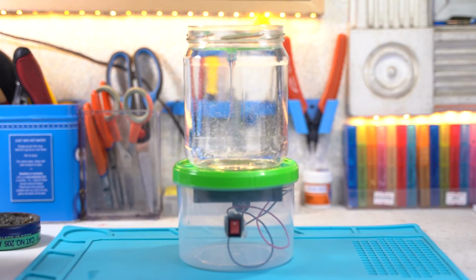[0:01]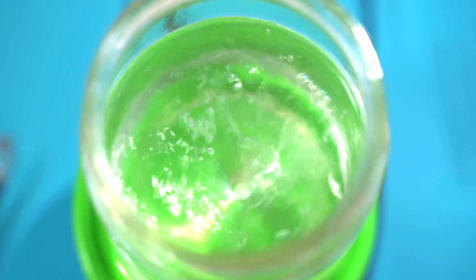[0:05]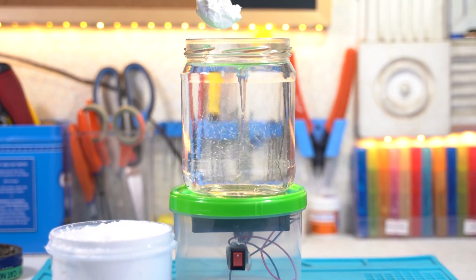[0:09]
In this week's Yuken project, we're going to build a magnetic stirrer. It's a simple and useful device I use for mixing chemicals for my projects, one of which is sodium hydroxide, which I use for PCB fabrication.
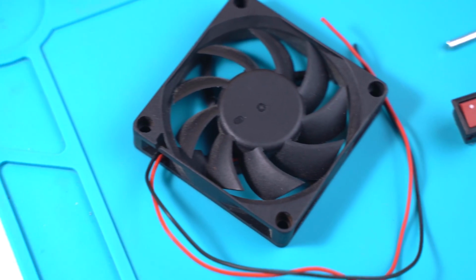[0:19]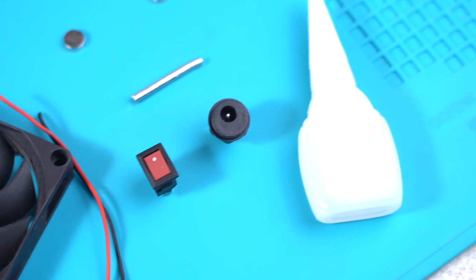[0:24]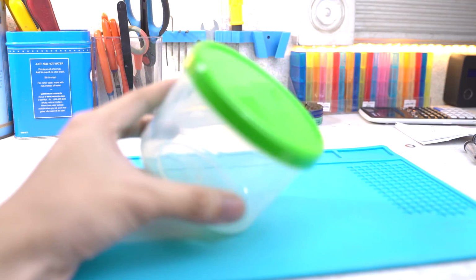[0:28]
Let's first start with the things that you will need. First, you'll need the 12-volt cooling fan, a switch and a DC jack, a super glue, and some neodymium magnets. You'll also need a plastic container in which your cooling fan would fit in.
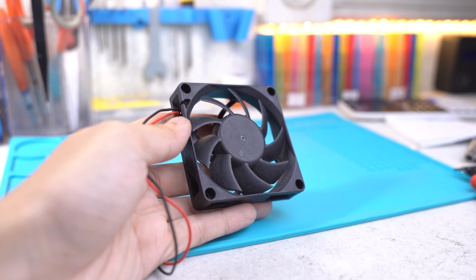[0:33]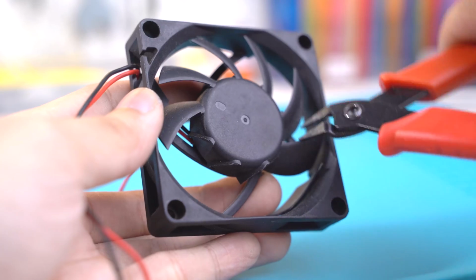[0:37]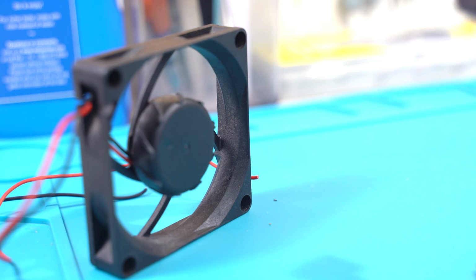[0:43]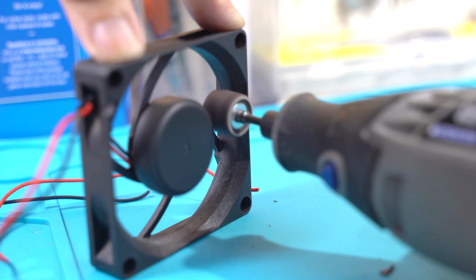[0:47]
The first step in this project is to remove the blades of the fan. In my case, I used a wire cutter to snip off the blades. The goal here is to eliminate wind resistance while keeping the fan's motor perfectly balanced. By using a Dremel tool, you can easily sand off the protruding edges.
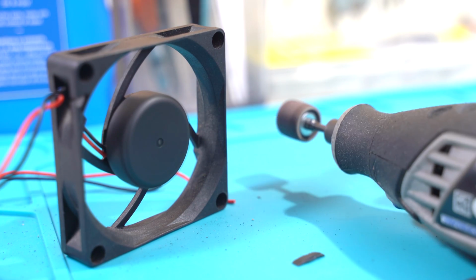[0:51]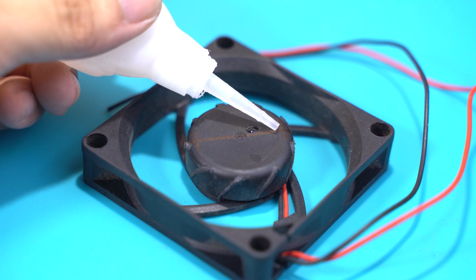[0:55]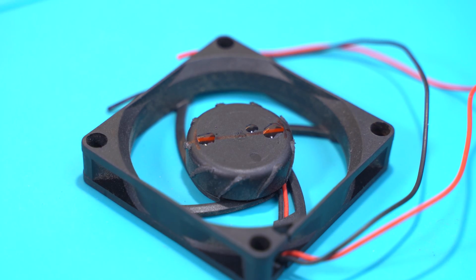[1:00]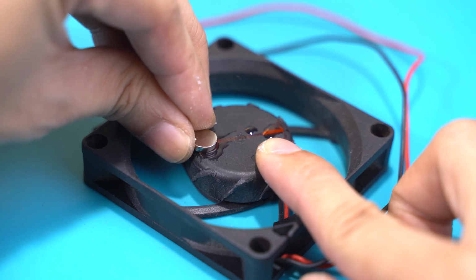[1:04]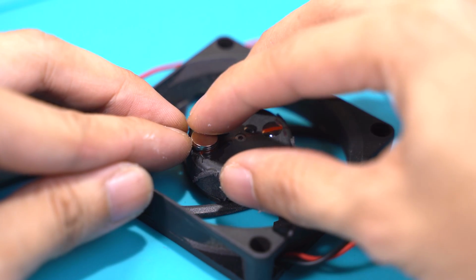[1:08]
In mounting your magnets, you'll need a few drops of super glue to secure it in place. The first magnet should have its north facing upwards. Use a pair of tweezers if you must. Just remember that the motor has magnets in it. Your magnets could repel from it, making the alignment process much more difficult.
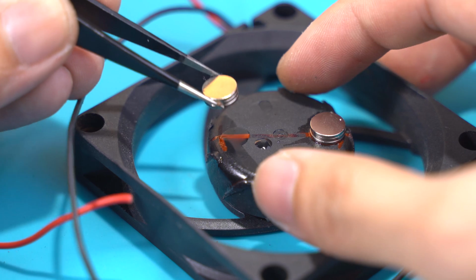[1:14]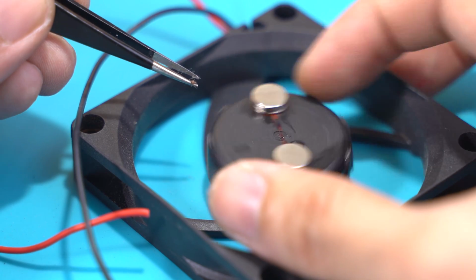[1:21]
In my case, I got a lot of super glue on my hand. As for the other magnet, its south must be facing upwards. Once done, set it aside and leave it to dry for a couple of minutes.
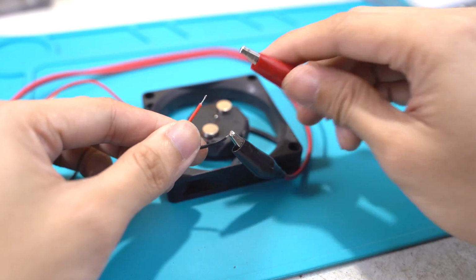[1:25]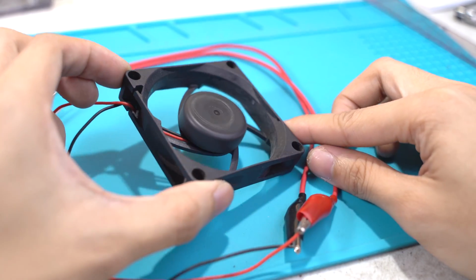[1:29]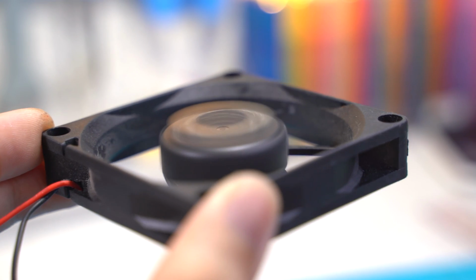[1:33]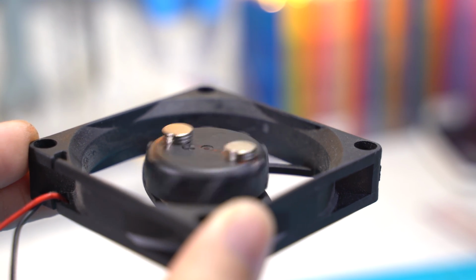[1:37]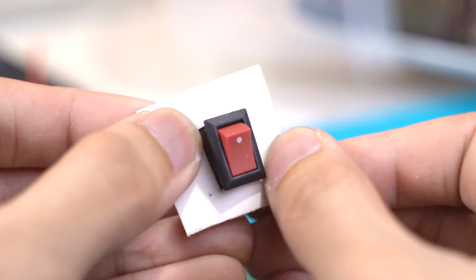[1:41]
I then set my bench power supply to 12 volts and observed whether my setup was well balanced. If vibrations are barely felt, it means you did a very good job in aligning the magnets. If not, you would have to redo it again as your motor would have a hard time spinning due to the added load.
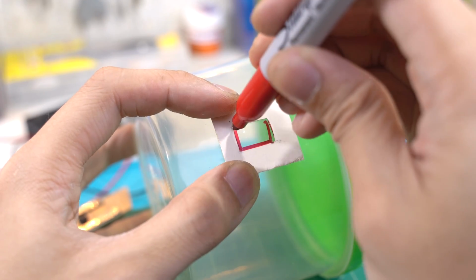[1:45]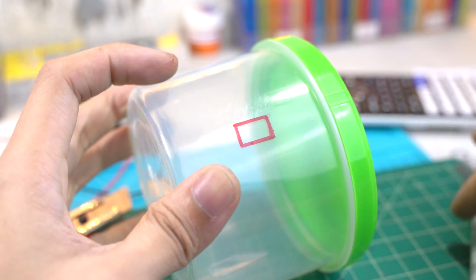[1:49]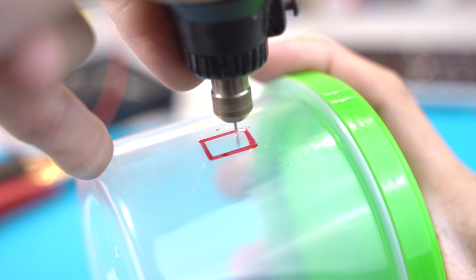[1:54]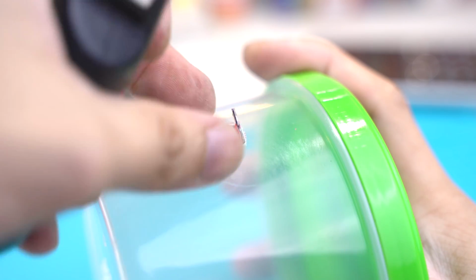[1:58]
I made a cardboard template for my switch and transferred the measurements to my plastic container. You can use a Sharpie or whatever kind of marker you have lying around. In my years of posting projects at Instructables, I'm often asked what I use to cut plastic. Well, I usually use my mini drill and use it as a routing tool. It's kinda like using your hands and your drill as a CNC machine.
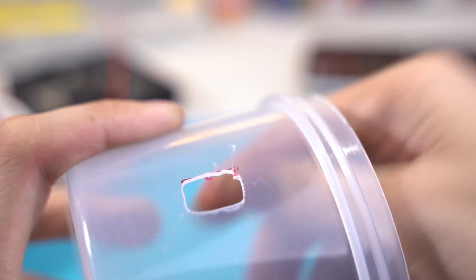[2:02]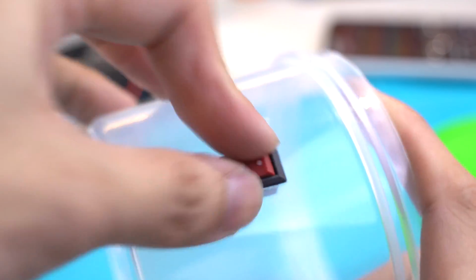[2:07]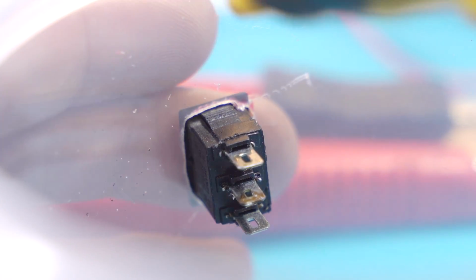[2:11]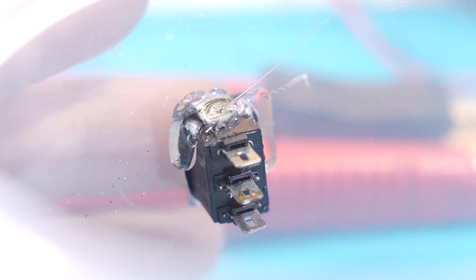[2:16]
Well, I accidentally broke my bit, so I had to pop off the remaining plastic. Anyway, after doing so, you can now mount your switch. To prevent your switch from wobbling around, you can use a few blobs of hot glue to secure it in place. Then you can cut another hole for your DC jack.
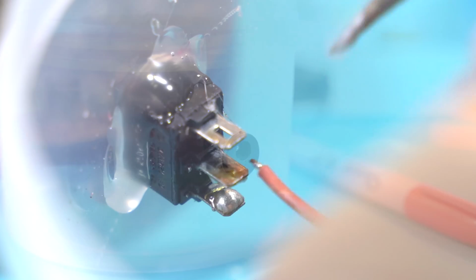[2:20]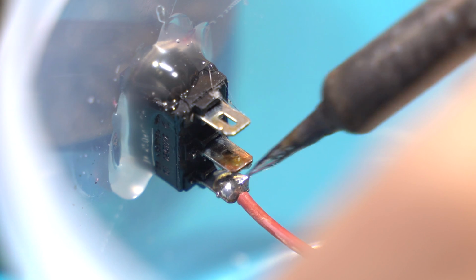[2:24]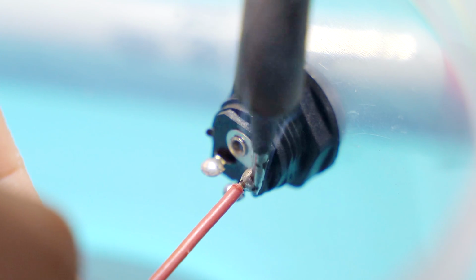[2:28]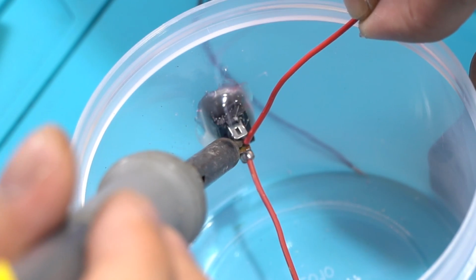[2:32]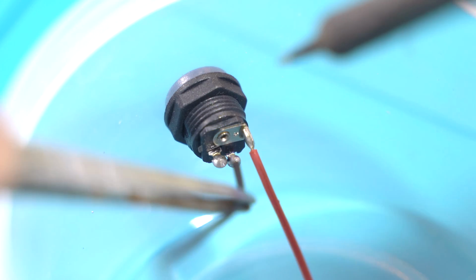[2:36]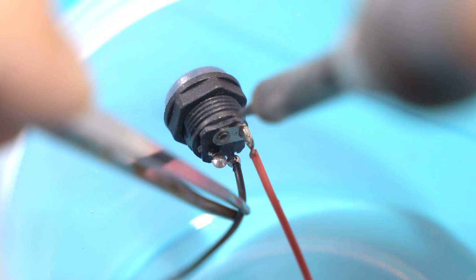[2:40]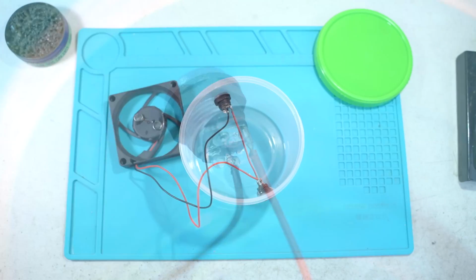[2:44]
As for the wiring, I connected the switch, the DC jack, and the fan in series. I started by soldering the lower pin of my switch to the positive end of my DC jack. Then soldered the positive wire of my cooling fan to the middle pin of my switch. As for the negative wire of my cooling fan, I then soldered it to the negative end of my DC jack. Now that you're done with the wiring, you can now mount your fan in place in your plastic container.
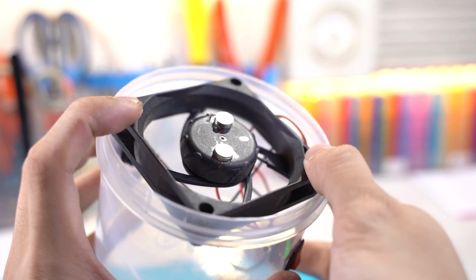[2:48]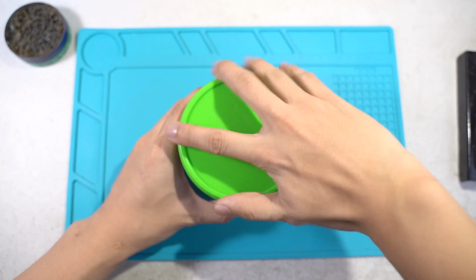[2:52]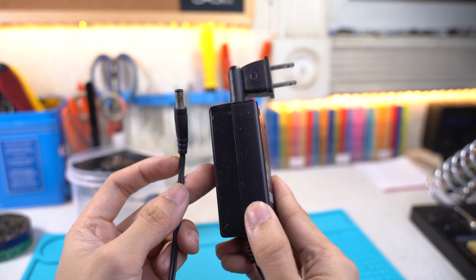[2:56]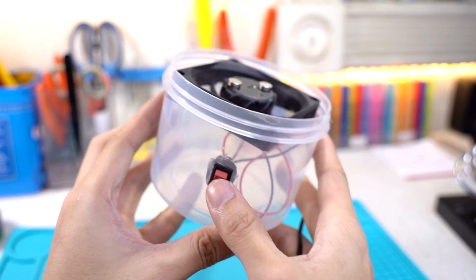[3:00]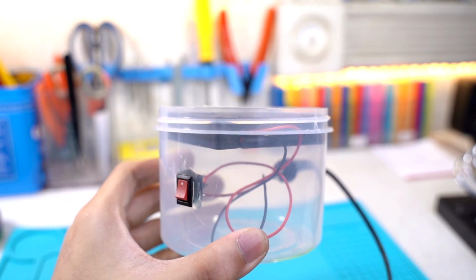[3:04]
Luckily, mine fit perfectly inside my chosen container. Since my cooling fan is rated at 12 volts, I had to find a 12-volt power brick from my stash. I then connected my brick to my project's DC jack and plugged it in on the outlet. After flicking the switch, your fan's motor should swiftly rotate.
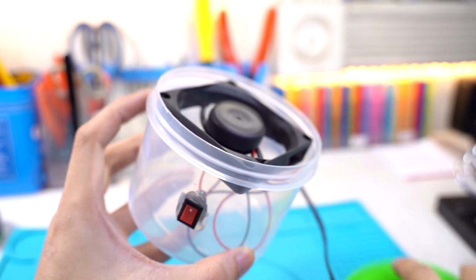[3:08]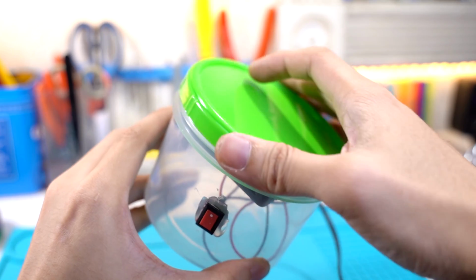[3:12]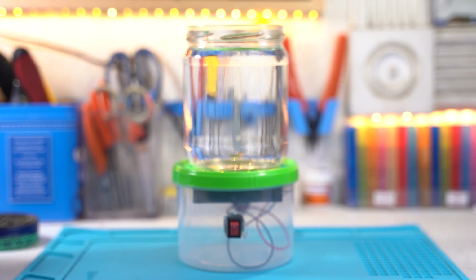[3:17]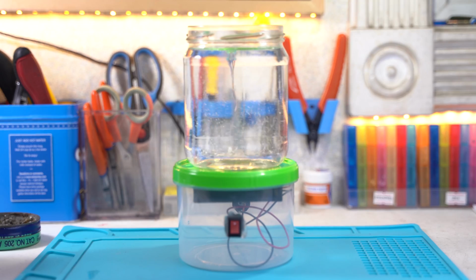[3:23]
Readjust your fan's distance if your magnets are hitting your container's lid. Be sure it's as close as possible to the lid. And now you have a magnetic stirrer. Put a jar on top, drop a small magnet, and turn on the switch. Your stirring magnet should spin really fast, creating a mesmerizing vortex on your liquid solution.
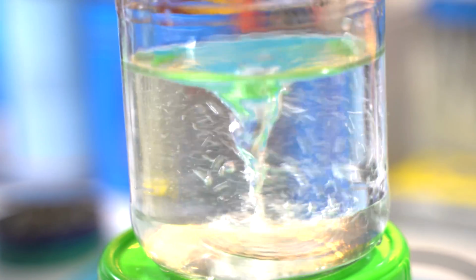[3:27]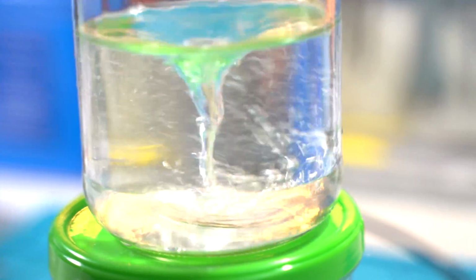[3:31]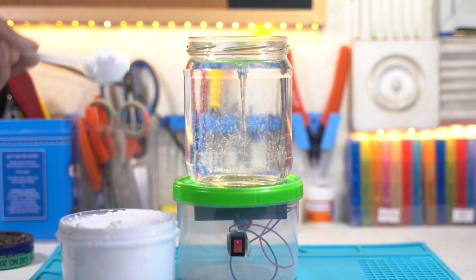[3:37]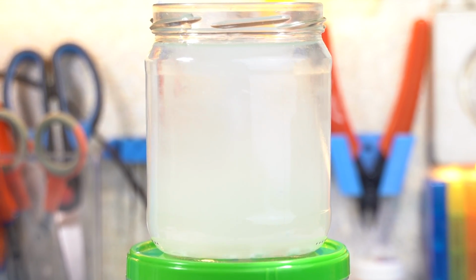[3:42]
In my experience, this is much more useful than manually stirring chemical solutions using a stick or a spoon. I usually use this for mixing my sodium hydroxide powder with water. It's something that I use as a developing solution in my homebrew double-sided PCB fabrication. And that's how you make a magnetic stirrer.